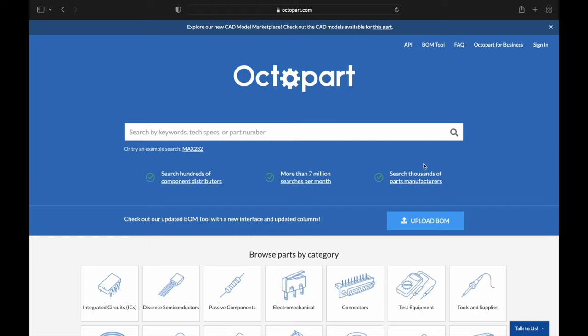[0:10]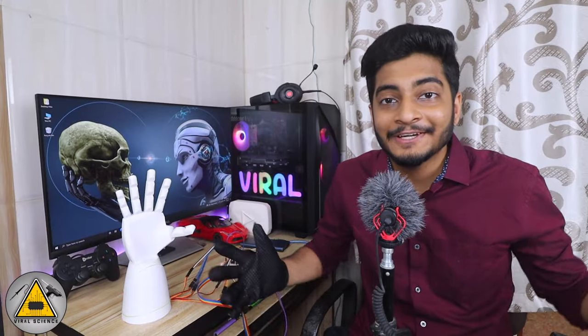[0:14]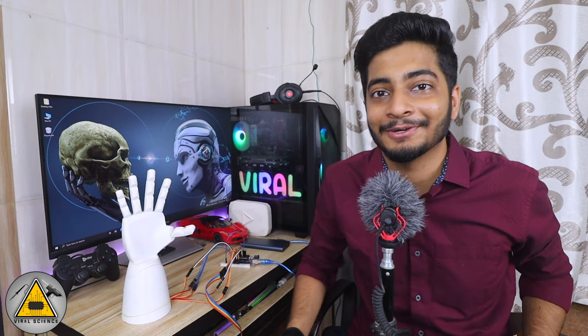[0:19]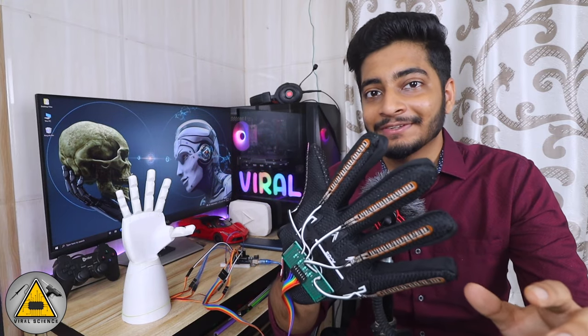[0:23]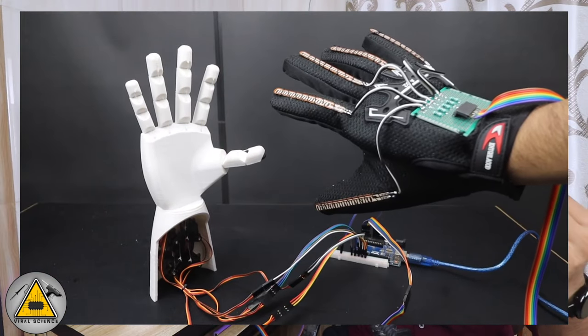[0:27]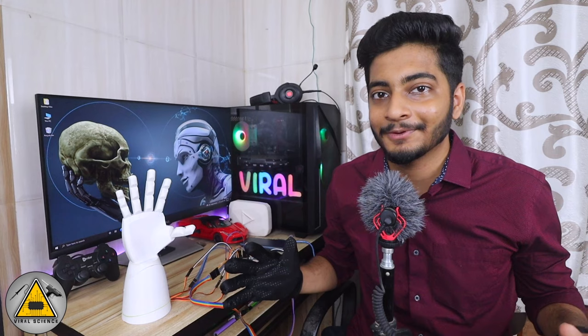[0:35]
Hey friends, welcome back to another video, and in this video I'll show you how to make this robo hand which can be controlled with this glove. Now this glove has some flex sensors on each of the fingers, and when this sensor is bent it changes its resistance value, and we are using this value as an input through Arduino, and we are using servo motors to control the fingers of this robo hand. Now this is a very simple project, and I'll explain you the code as well in the video.
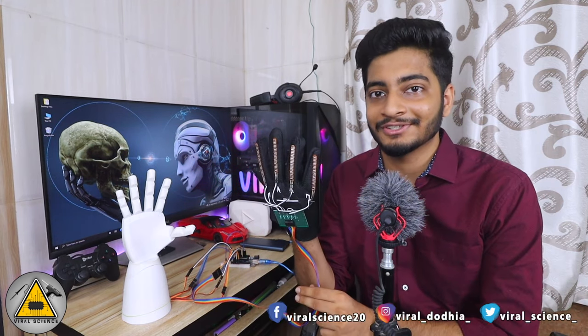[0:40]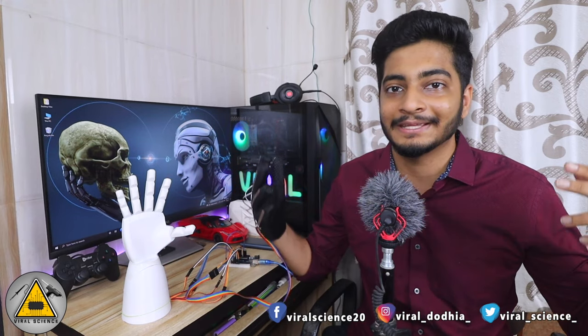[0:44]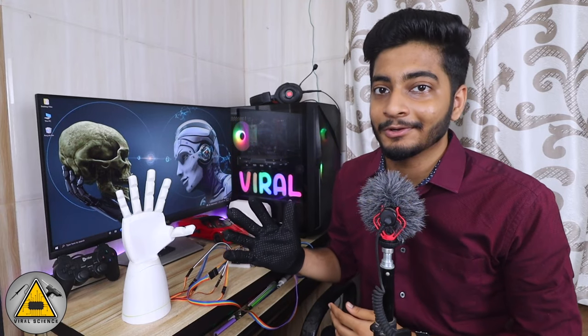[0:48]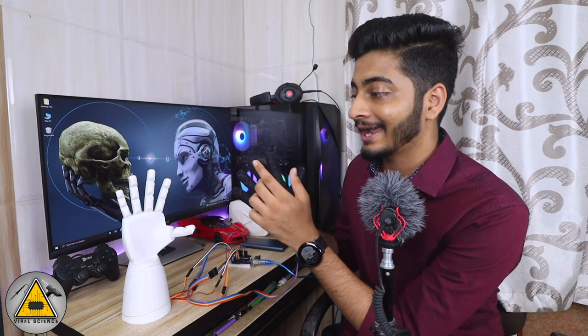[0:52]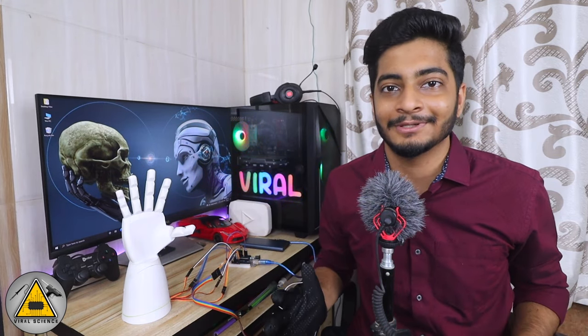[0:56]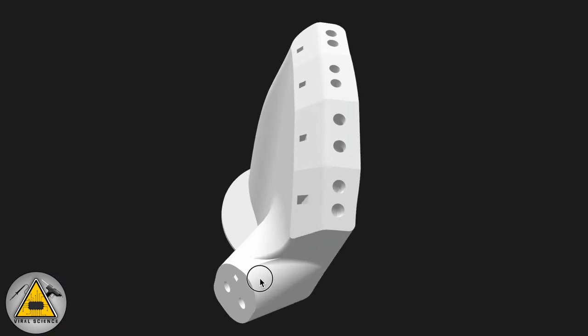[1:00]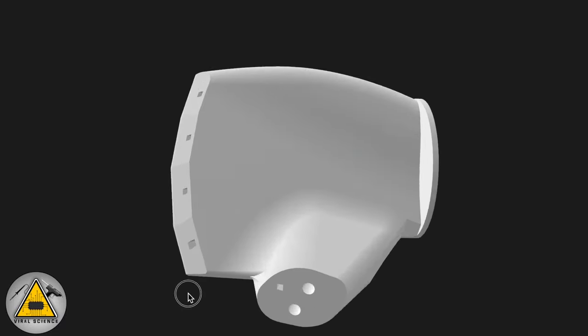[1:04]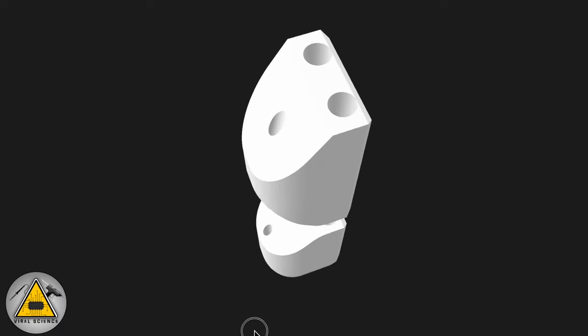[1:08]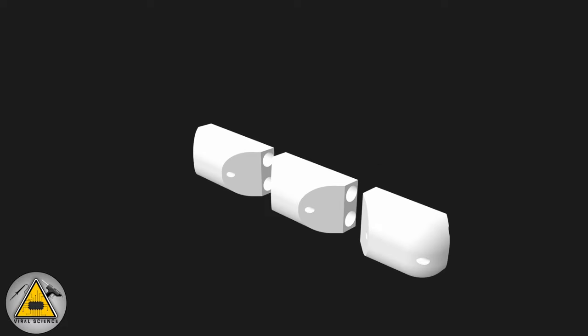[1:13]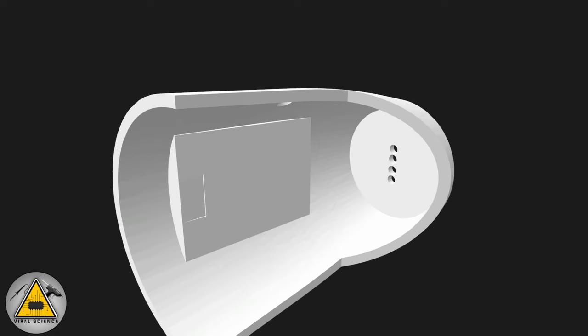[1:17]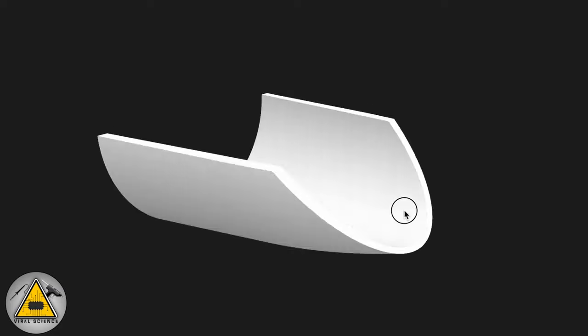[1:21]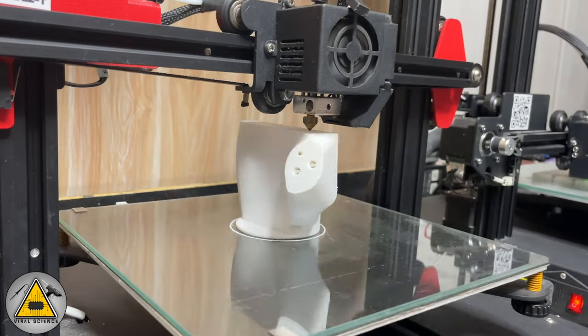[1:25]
These are the 3D files which we'll be 3D printing. This is the right hand and this is the left one. This is thumb. And these are all the fingers. This is the lower extended part of the hand where we'll be connecting servo motors, and this is the cover for it. So now we'll 3D print all these files.
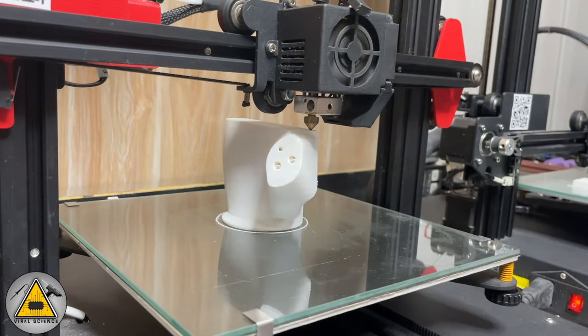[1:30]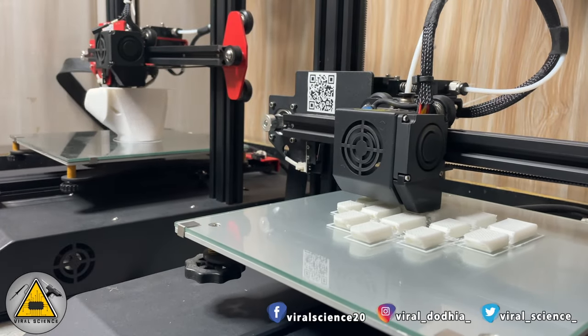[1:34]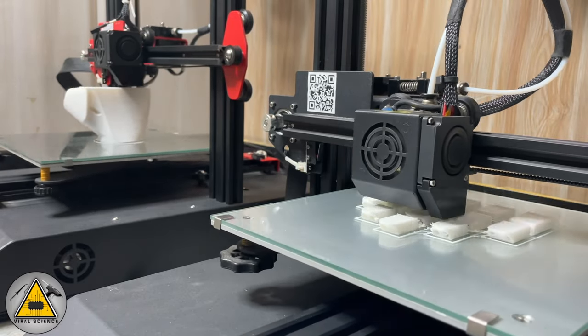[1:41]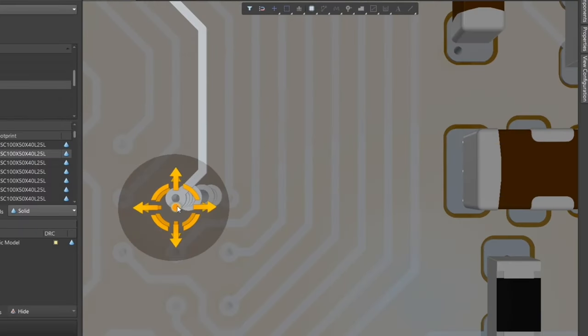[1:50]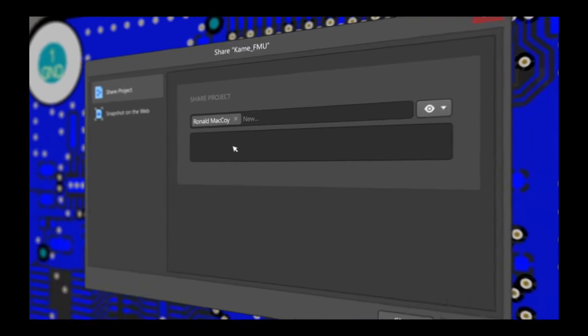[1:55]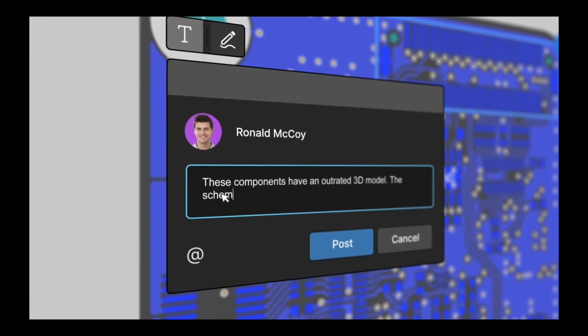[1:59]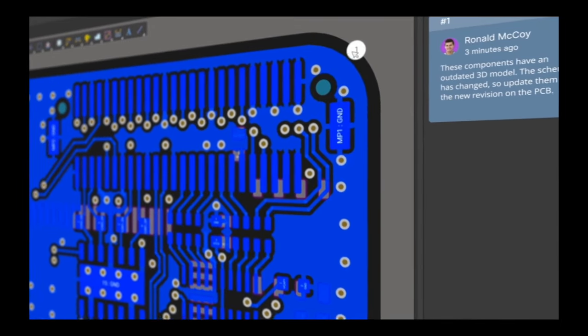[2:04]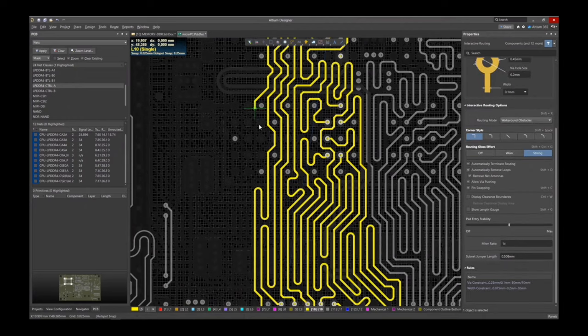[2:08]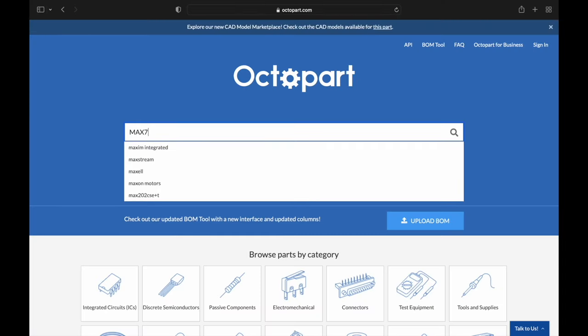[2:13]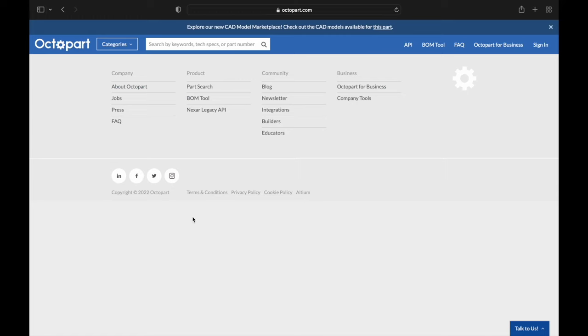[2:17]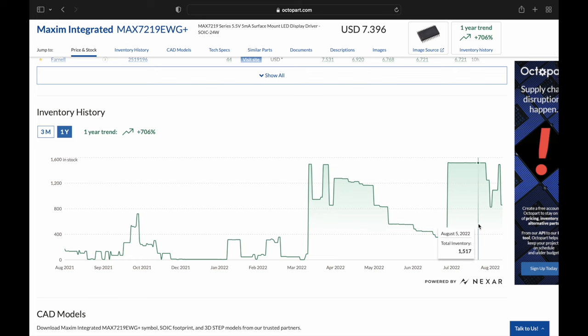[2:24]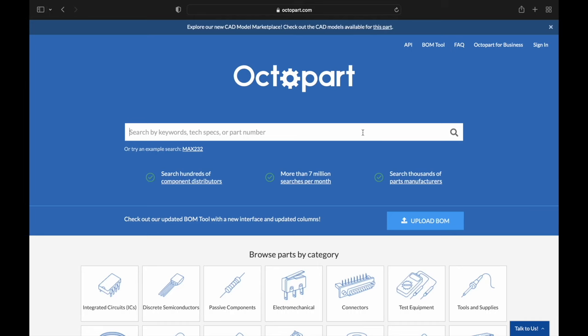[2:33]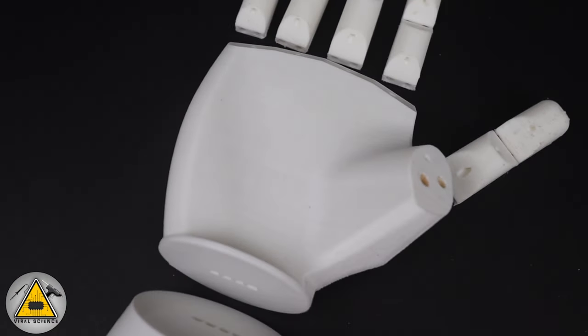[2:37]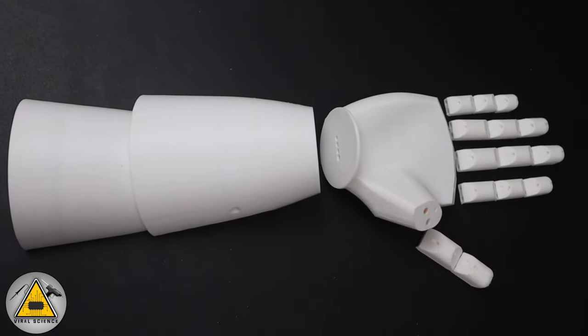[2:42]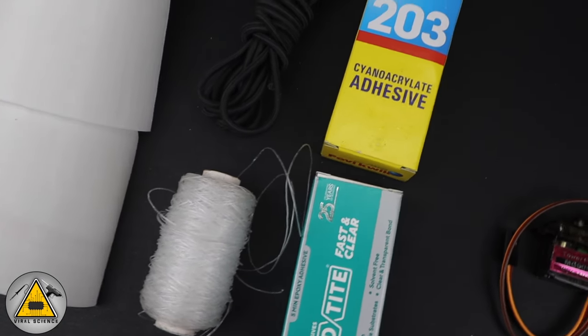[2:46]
So here are all the 3D printed parts ready for our robo hand. And with this, you will need a transparent string. You'll need some adhesives to stick it. And also you'll need a 2mm elastic band to connect the fingers.
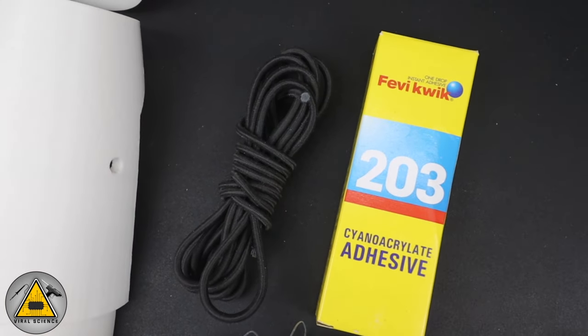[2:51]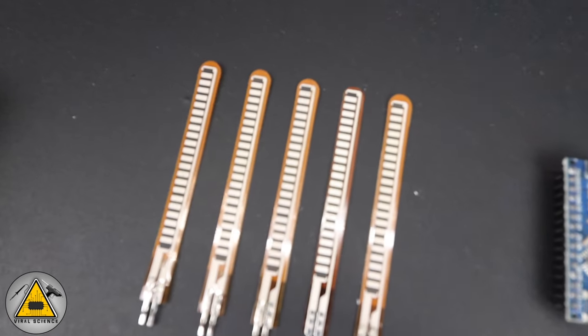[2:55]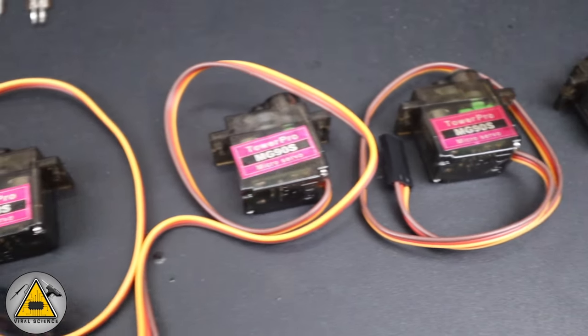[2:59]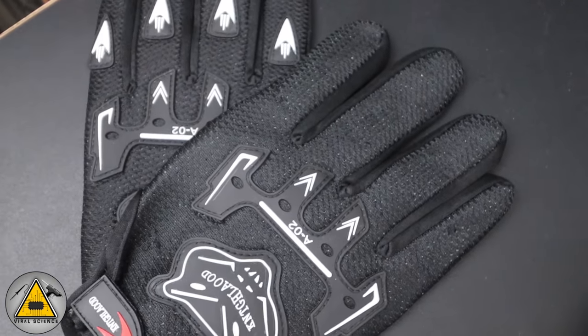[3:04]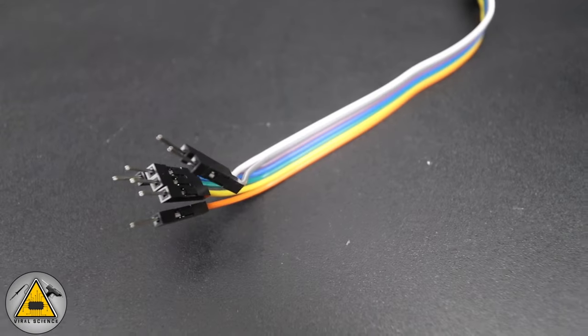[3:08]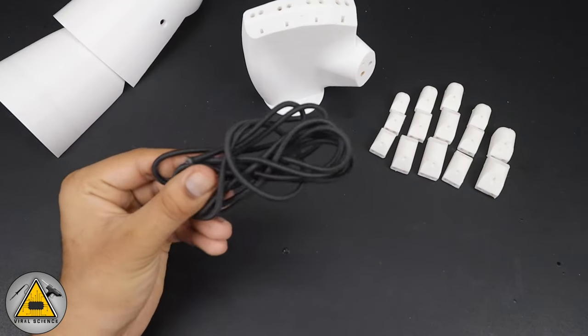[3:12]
So from the electronic section, you'll need an Arduino board. I'm using Arduino Uno. These are the flex sensors. I'm using 5 flex sensors for each of the fingers. And these are the 5 servo motors. This is a pair of gloves. You will need one glove. This is a breadboard, and you will need some jumper wires. So now let's assemble this robo hand.
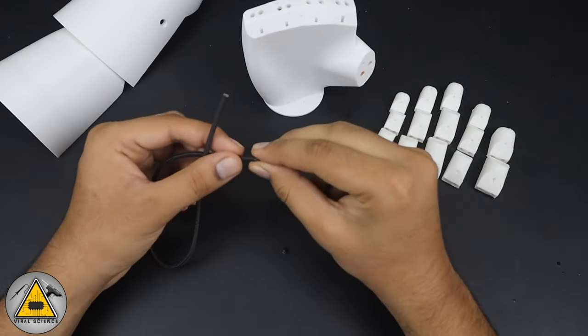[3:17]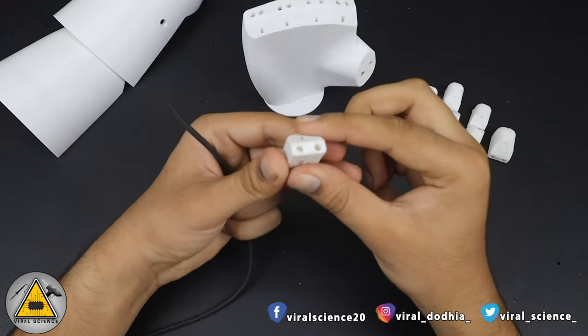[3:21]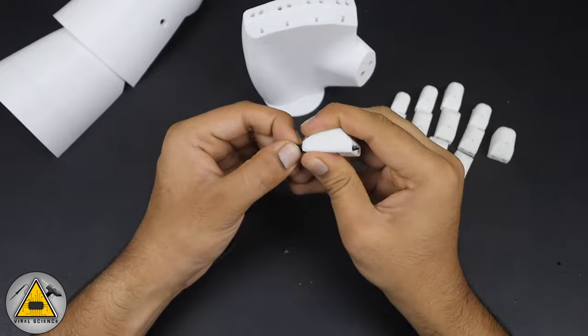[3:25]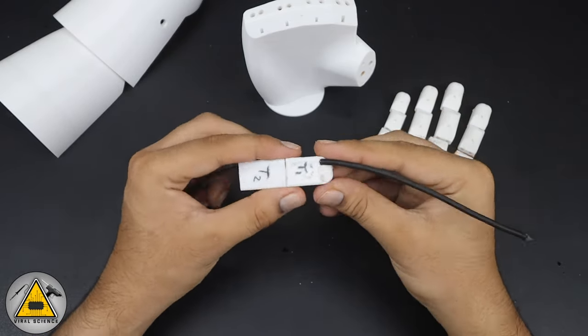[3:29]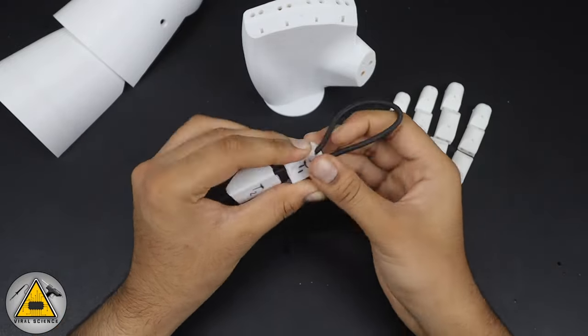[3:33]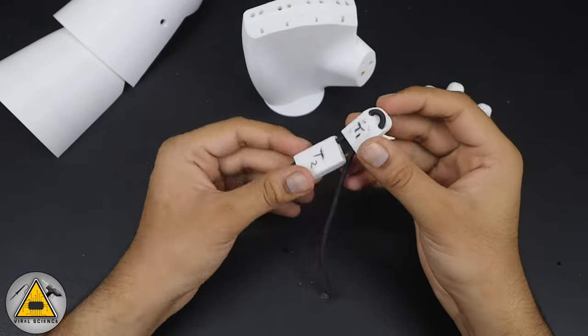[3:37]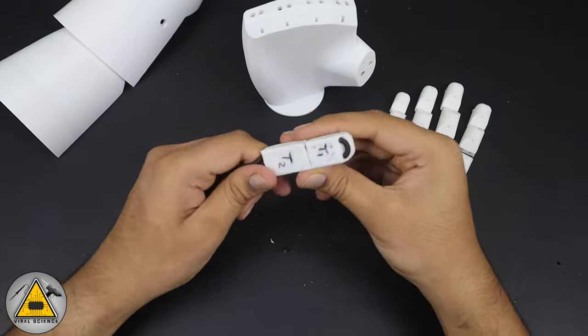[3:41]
So first we'll need this 2mm elastic band. I'm taking a piece of it, and first we'll assemble this thumb. So clear out these holes and pass this 2mm elastic band through these holes. Take the second piece, pass through it as well. And again pass from that second piece and again to the first one. So in this way we have to assemble the fingers. So the thumb is assembled because it has just 2 joints.
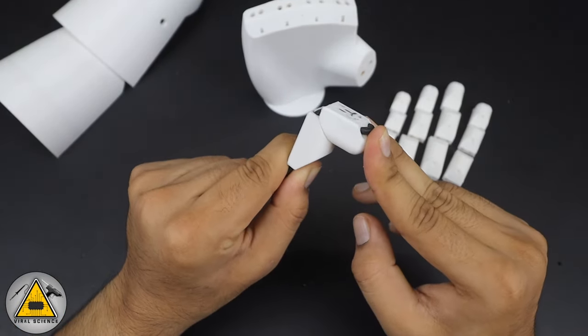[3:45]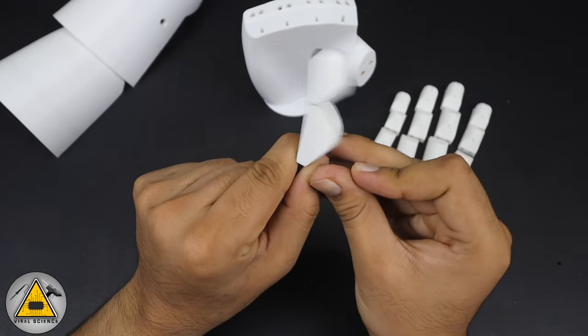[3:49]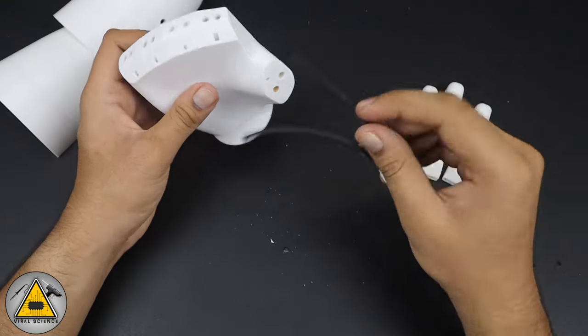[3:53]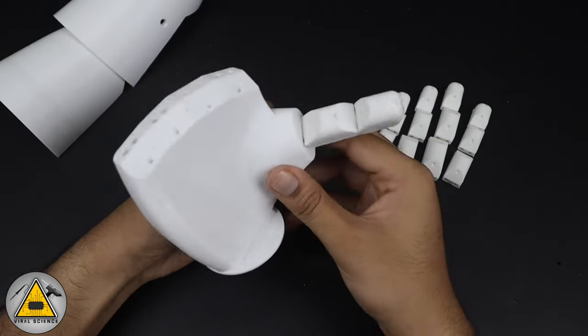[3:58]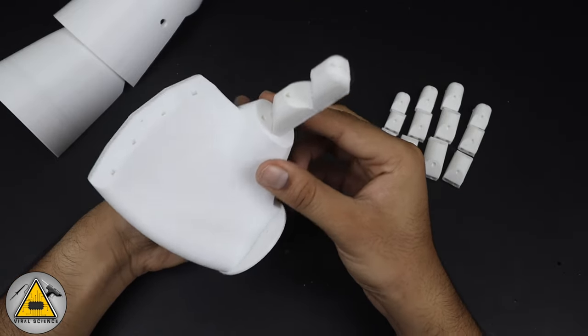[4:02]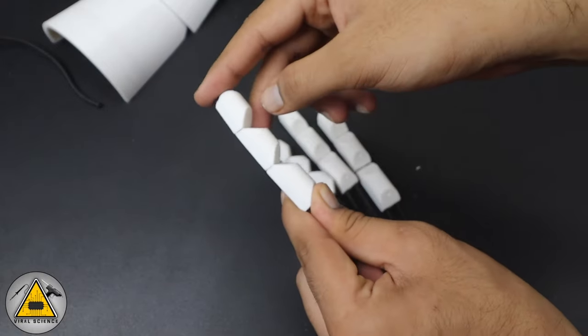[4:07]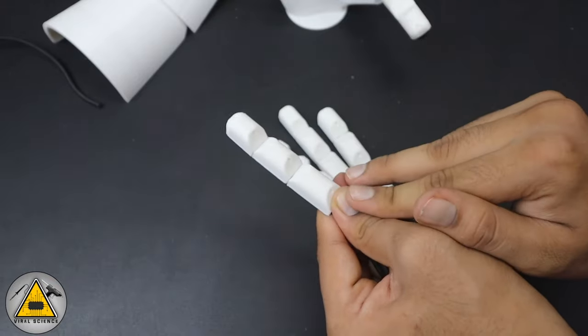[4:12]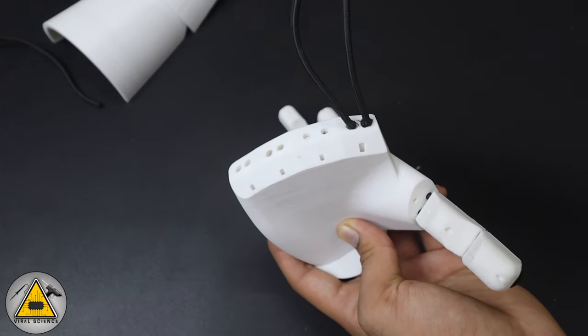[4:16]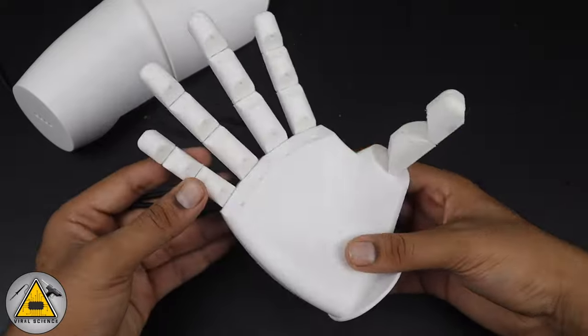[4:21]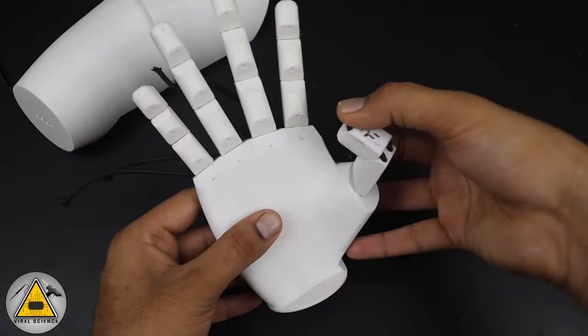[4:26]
Similarly, we'll connect this to our main hand. We'll pass this elastic band from the holes and we'll tie a knot on the back side. Similarly, I have assembled these fingers as well. All these fingers have 3 joints each and it's working perfectly. So now we'll pass on this elastic through the holes of the main hand and we'll tie a knot on the back side. So you can see in the video. And now all the fingers and the thumb is working perfectly.
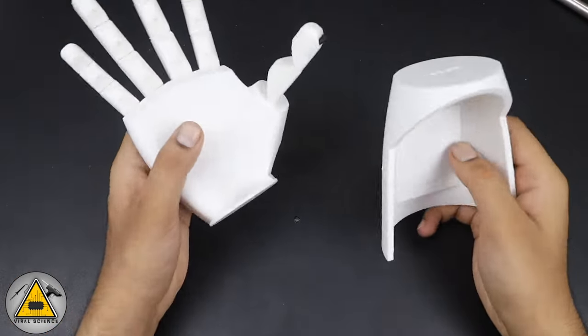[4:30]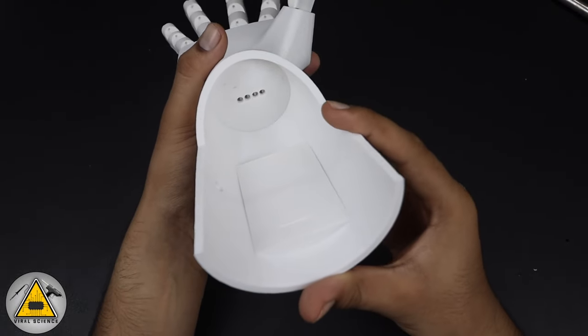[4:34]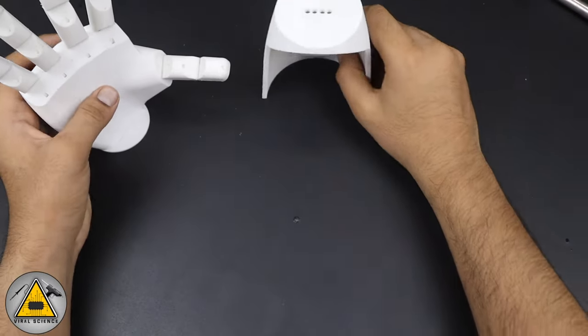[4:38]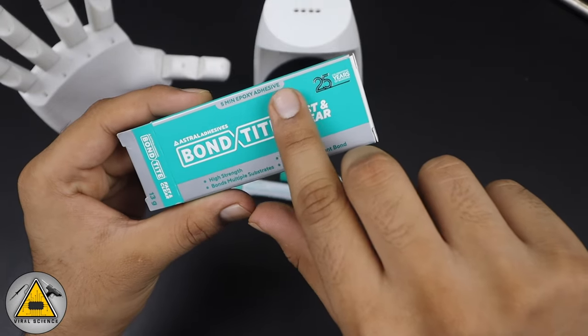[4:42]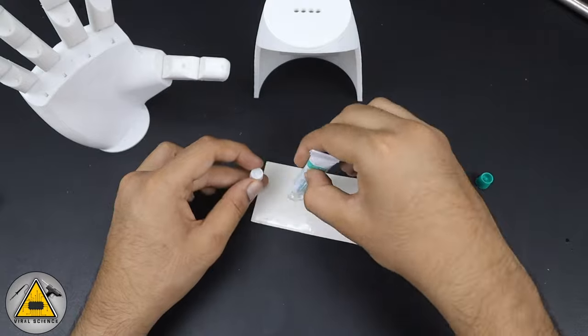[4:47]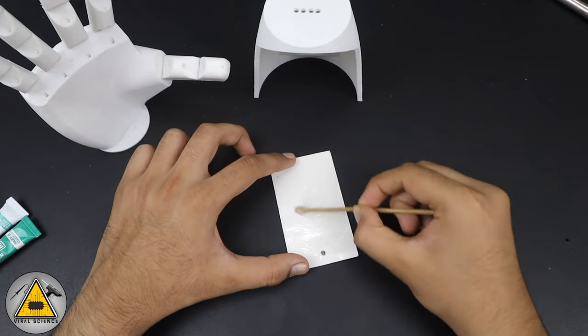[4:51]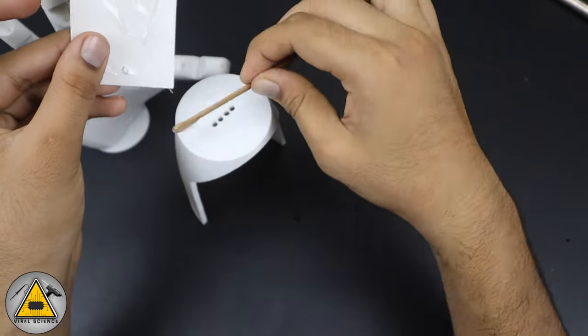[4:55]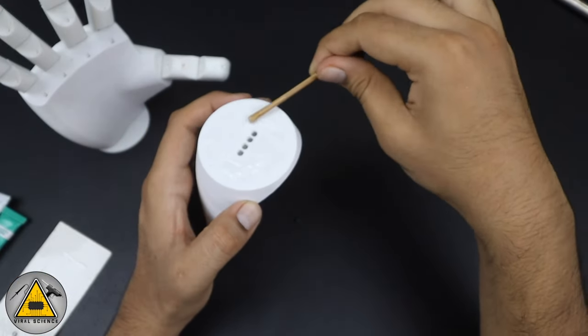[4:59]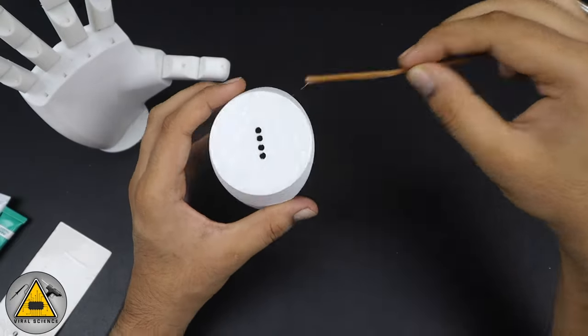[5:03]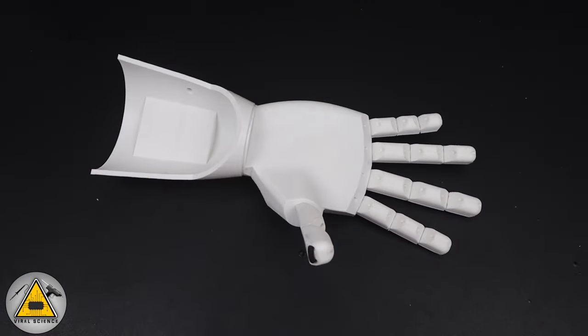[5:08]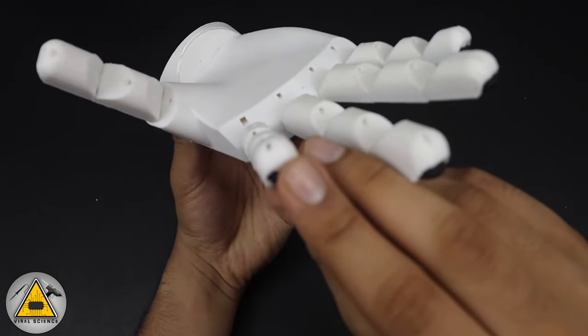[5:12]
Now we'll connect this lower extended part to the main hand. So to do this, we need to stick it. And to stick it, I'm using this Bond Tite adhesive. So this adhesive just requires 5 minutes to stick. So first we'll mix the 2 compounds properly. We need to take equal amount of compounds. Now we'll spread it on the lower end, and we'll stick the upper hand and we'll match the holes. So now after 5 minutes it dried up and it was sticked properly.
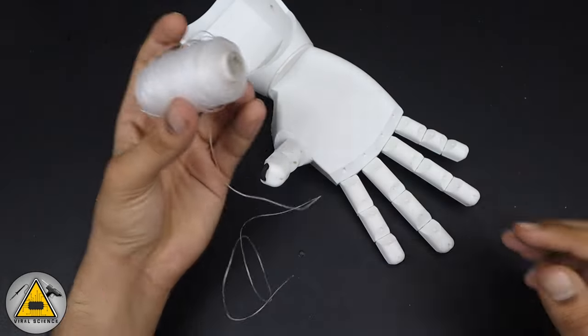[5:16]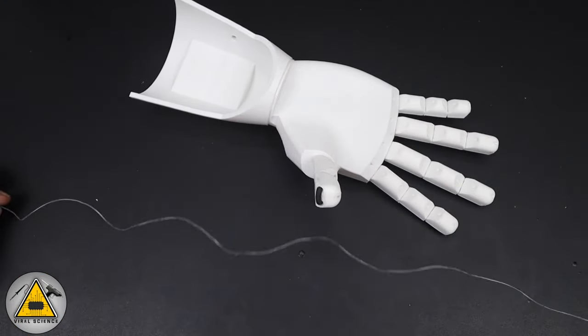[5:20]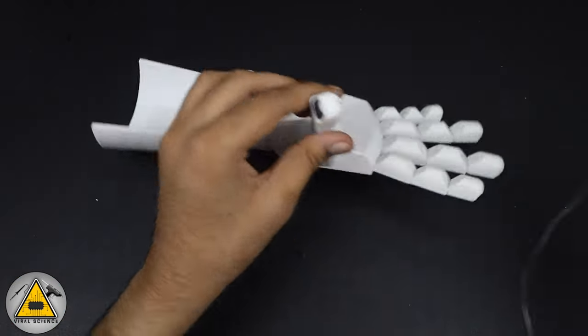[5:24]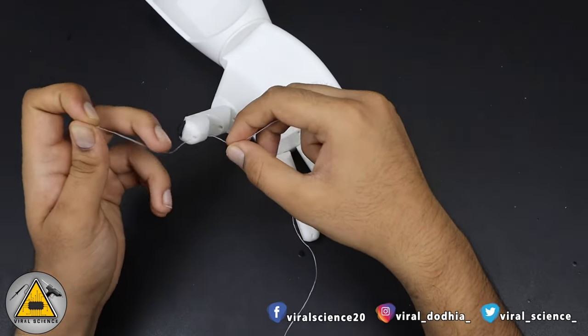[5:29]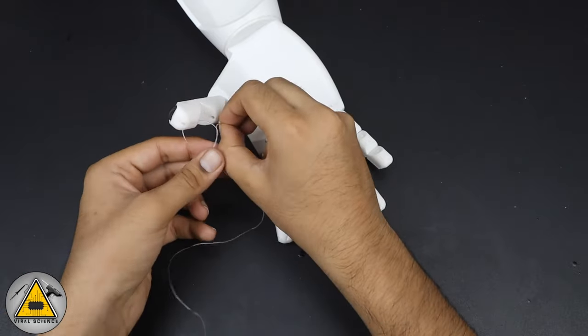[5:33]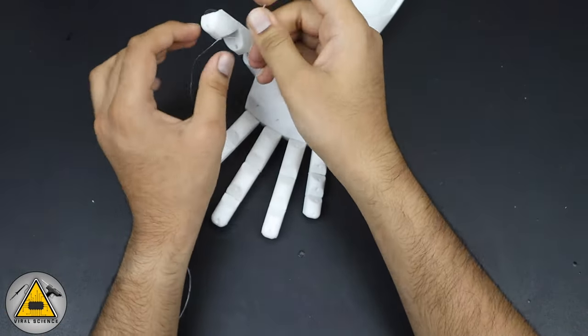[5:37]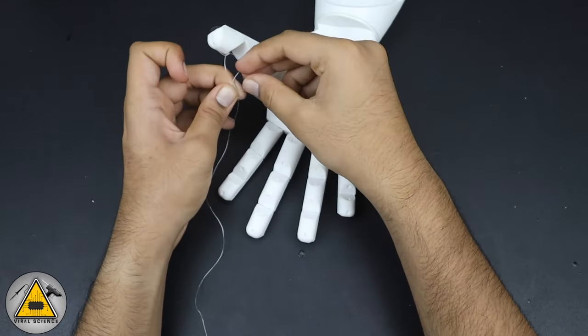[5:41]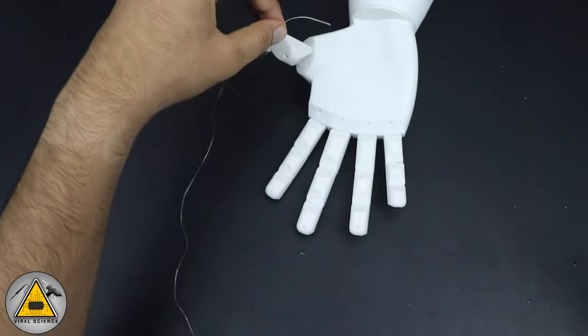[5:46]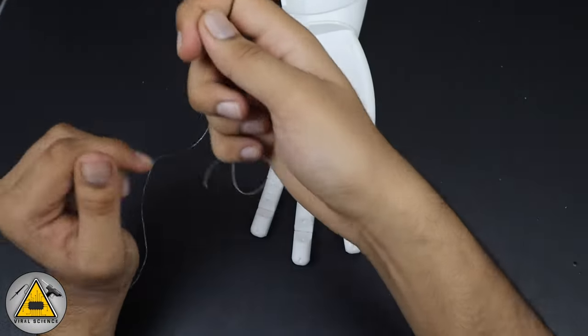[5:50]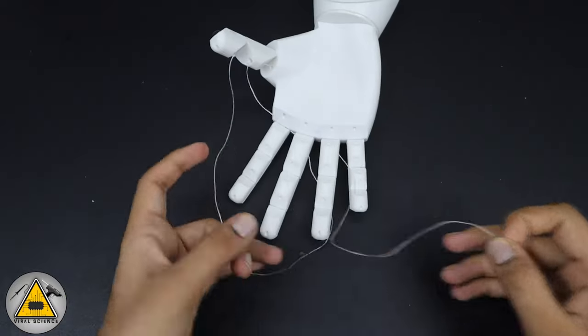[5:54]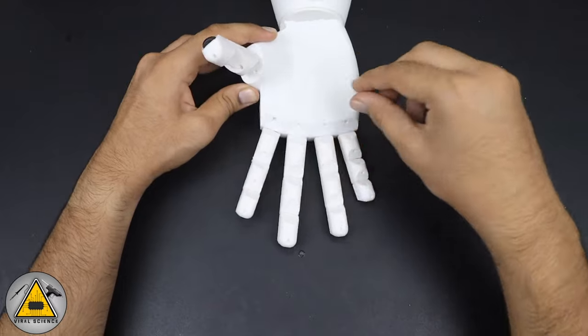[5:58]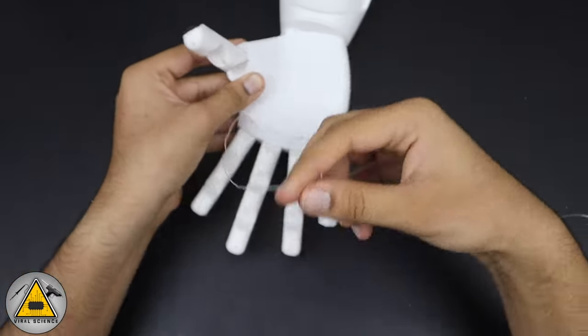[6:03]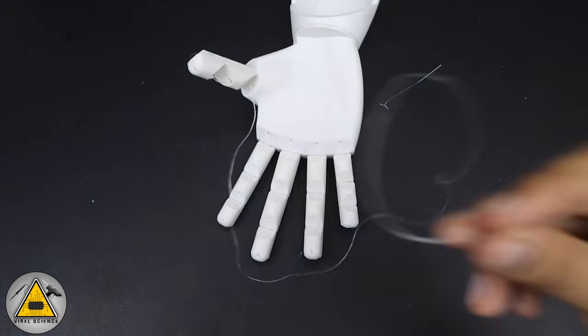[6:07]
So now we'll connect the transparent string to each of the fingers. So we'll take a piece of it and we'll pass from the top joint of the thumb and we'll tie a knot over there. And now we'll pass the string from the respective corresponding holes. And at last from the hand. And from here we'll get the string at the bottom where we'll be connecting the servo motors.
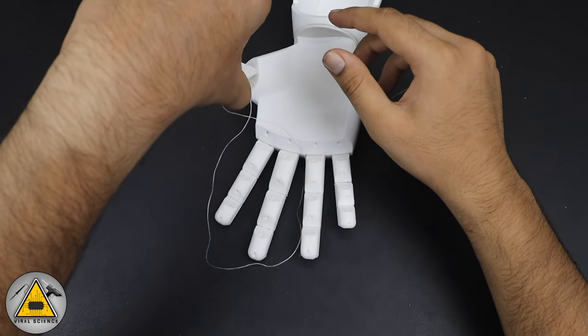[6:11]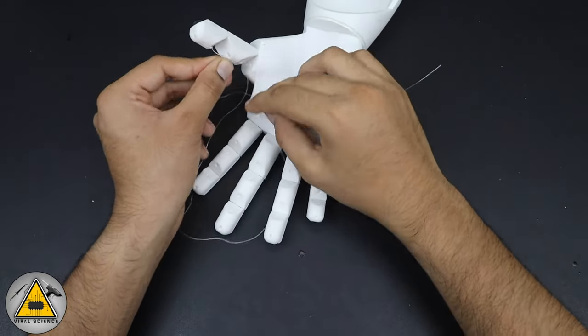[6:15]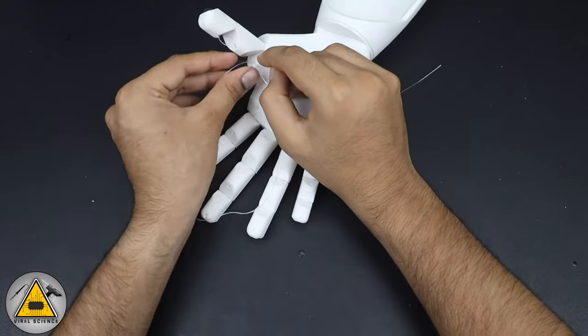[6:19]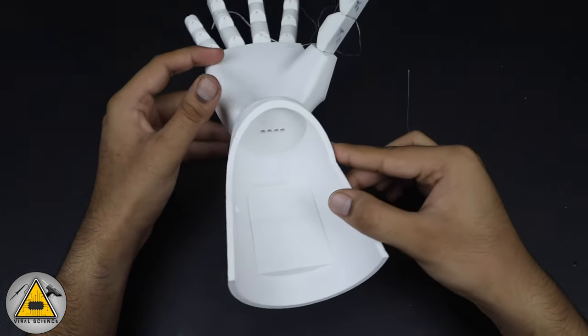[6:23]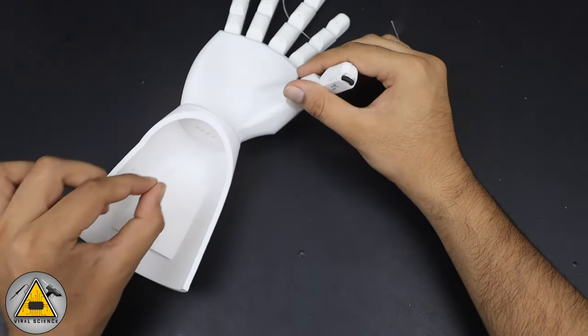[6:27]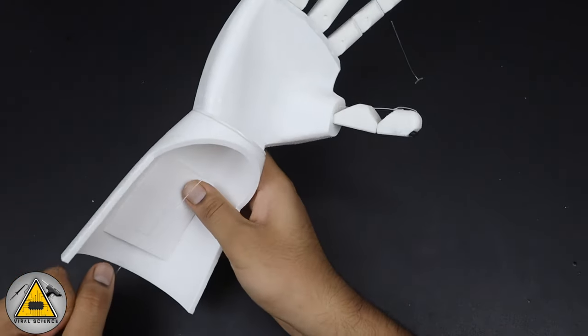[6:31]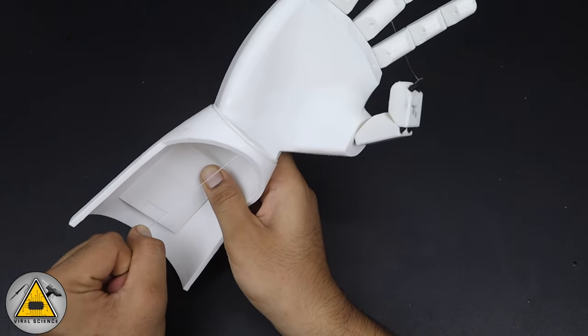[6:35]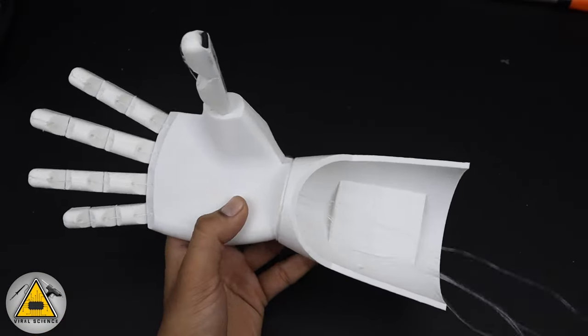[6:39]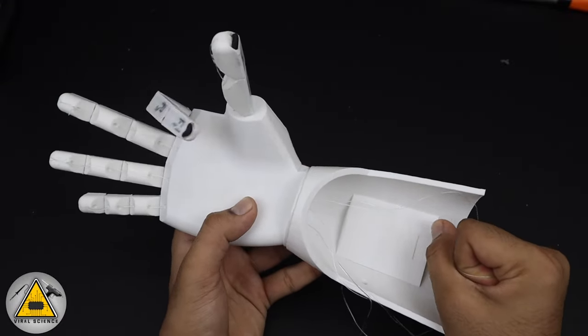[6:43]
So now as you can see, when I pull the string, you can see the movement in the thumb. So this will be done by the servo motors. Similarly, I have connected strings to all the 5 fingers and you can see it's working very smoothly and perfectly.
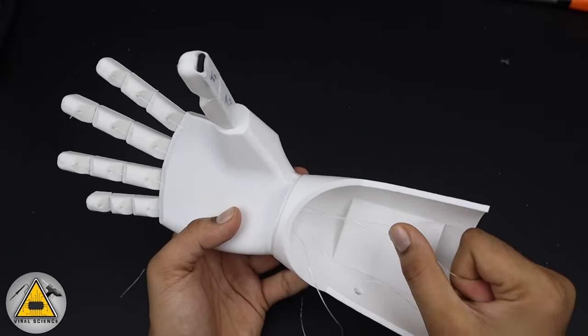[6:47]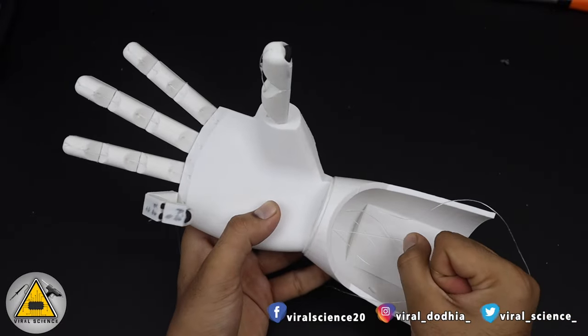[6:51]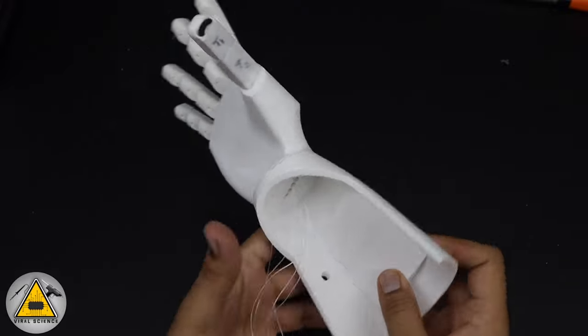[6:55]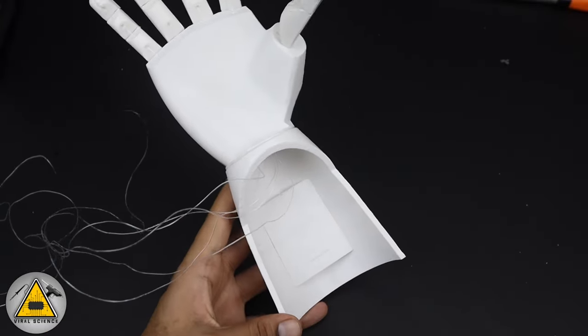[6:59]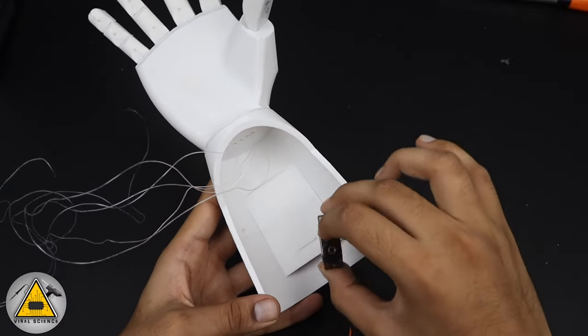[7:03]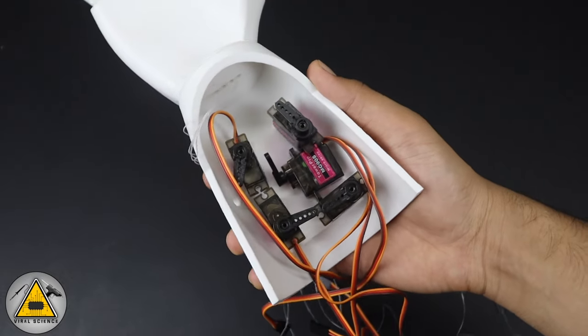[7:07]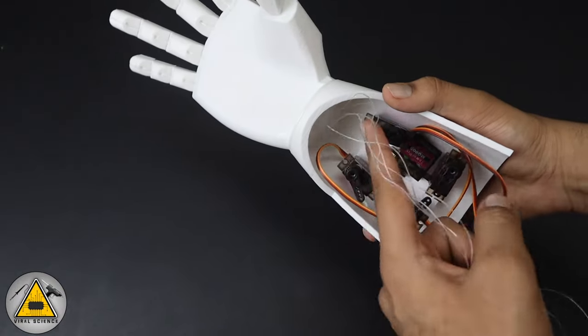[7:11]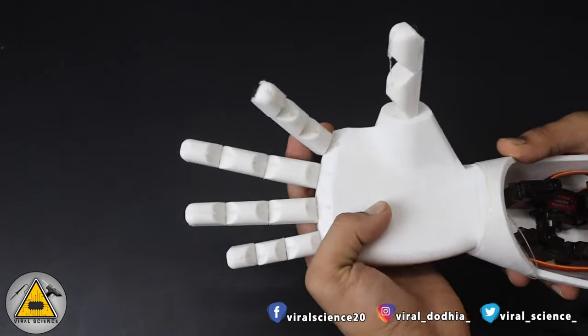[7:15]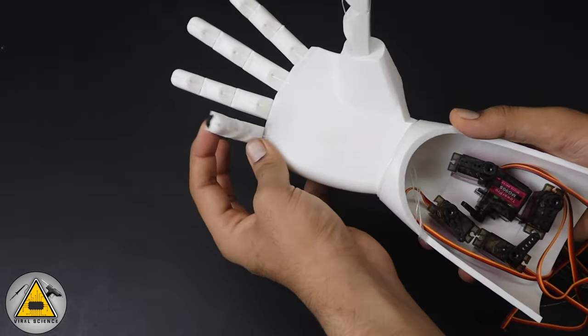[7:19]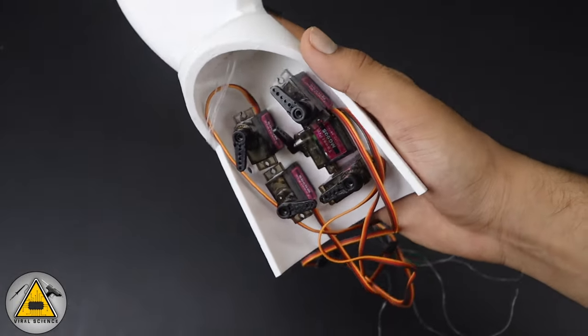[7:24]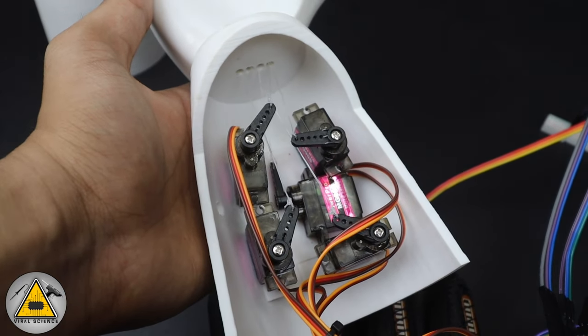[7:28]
So now we'll connect the servo motors on this bottom part with the super glue. You can see the alignment of the servo motors, how I have sticked it. And now you need to connect this string to each of the servo motors arm. Now I have connected the string to the servo arm and also put a drop of super glue so it won't come out.
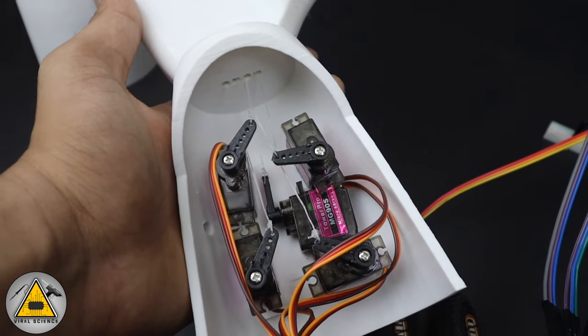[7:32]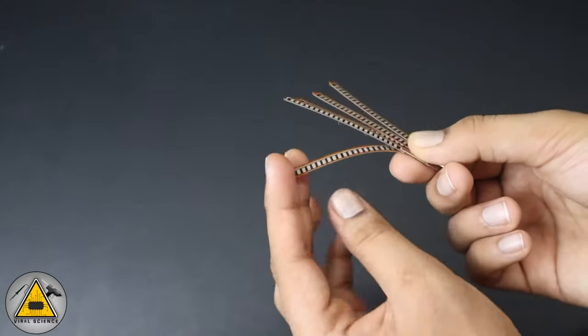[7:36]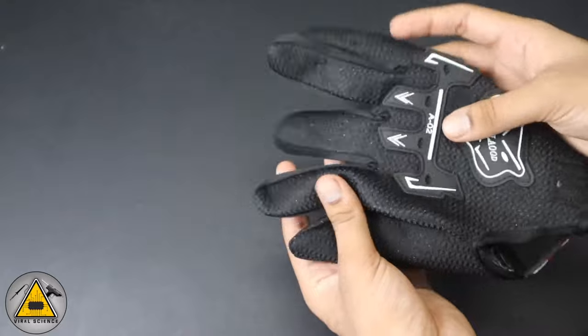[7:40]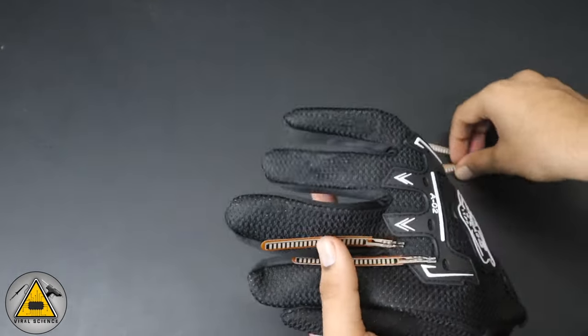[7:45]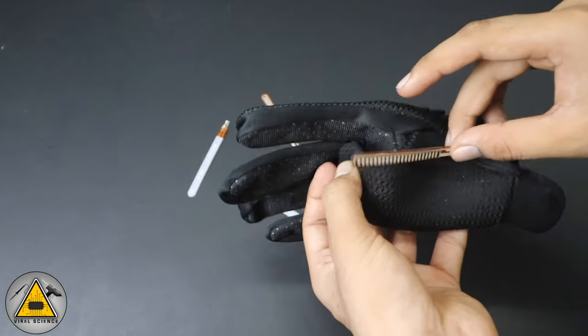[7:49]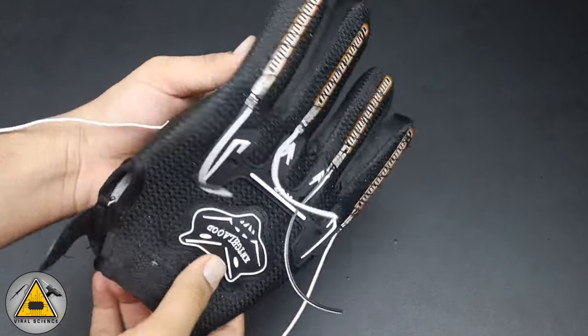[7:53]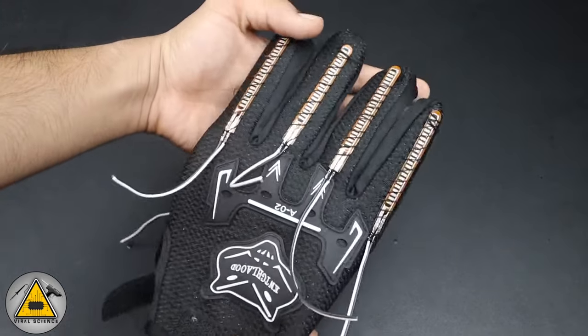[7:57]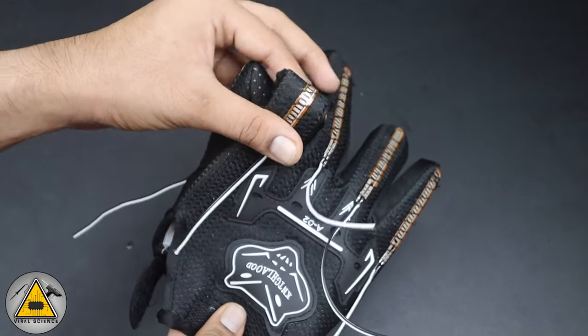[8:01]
So now we'll connect these flex sensors on the glove. So each finger will get a flex sensor and to stick it on this glove, we'll use a needle and a thread and we'll stitch around this flex sensor on the fingers. As you can see, I have done the stitching work. Make sure you don't damage the flex sensor while stitching. Also, I have soldered wire to each of the flex sensors.
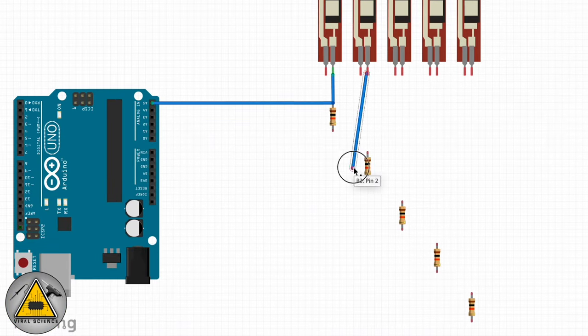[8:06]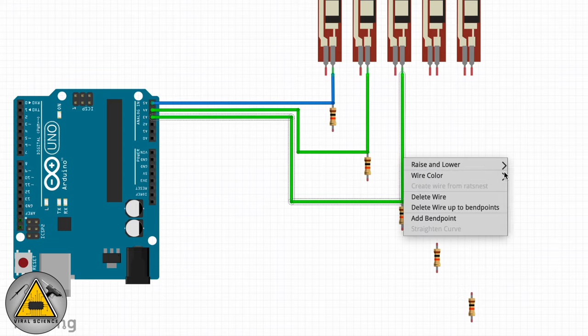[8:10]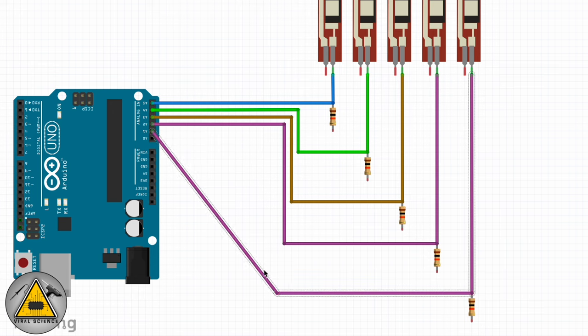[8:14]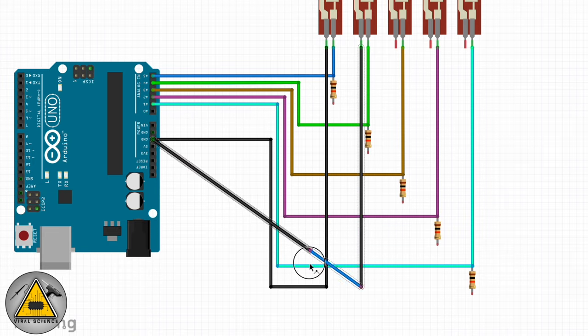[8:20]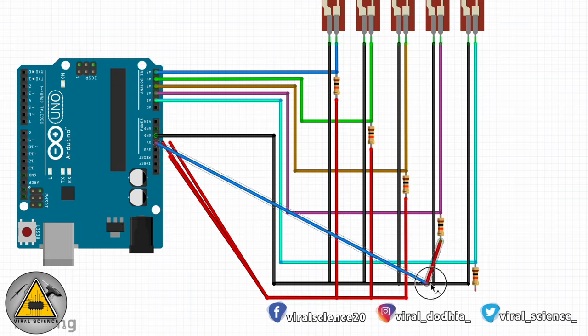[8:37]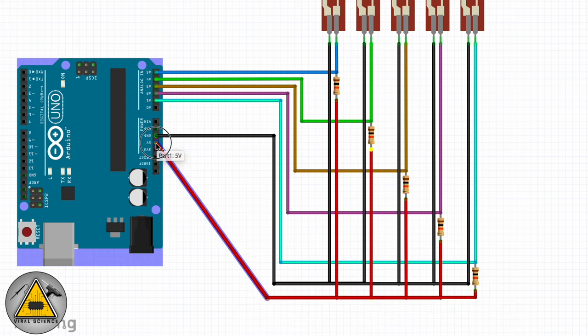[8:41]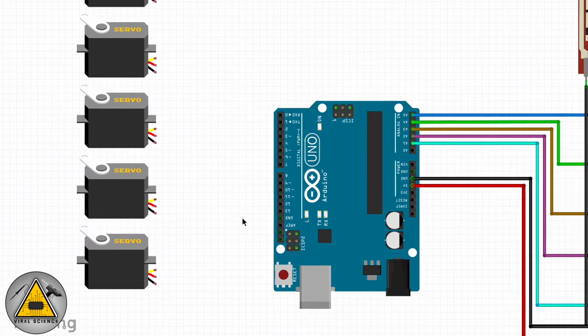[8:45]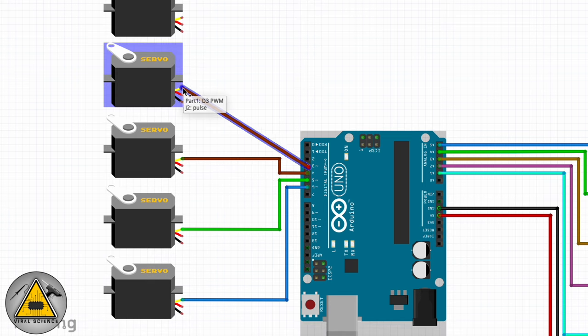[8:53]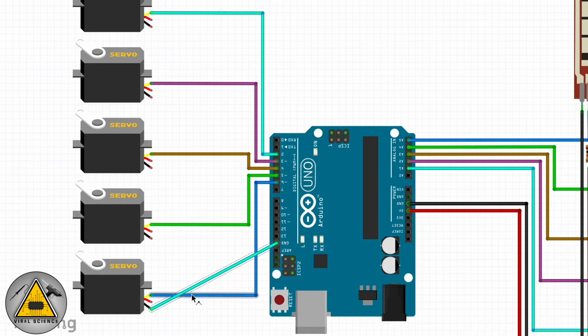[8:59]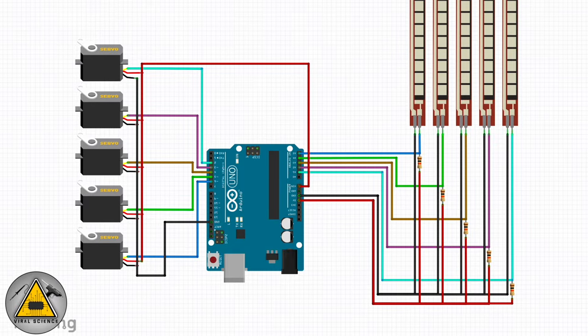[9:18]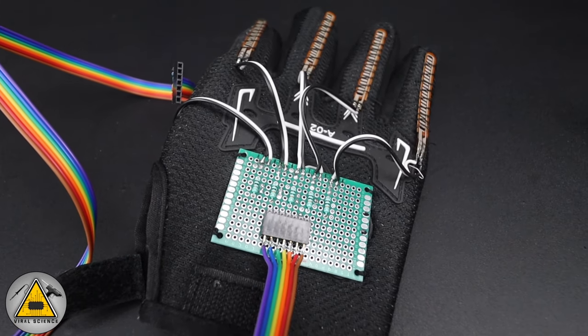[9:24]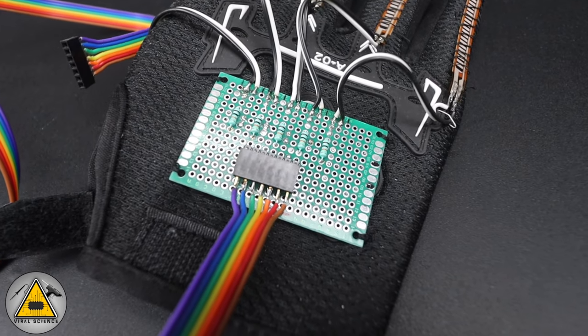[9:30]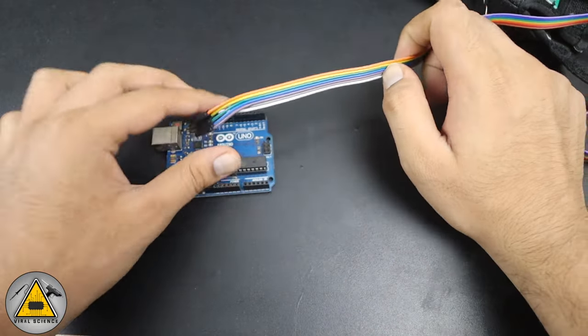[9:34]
So now it's time for the electronic connections. So here is the circuit diagram which I am demonstrating. So you need to do all the connections according to this circuit diagram. So as per the circuit diagram, I have soldered these resistors on a PCB and stitched it on the gloves. And to extend this connection to Arduino, I'm using this ribbon cable. So now we'll continue the remaining connections with the Arduino.
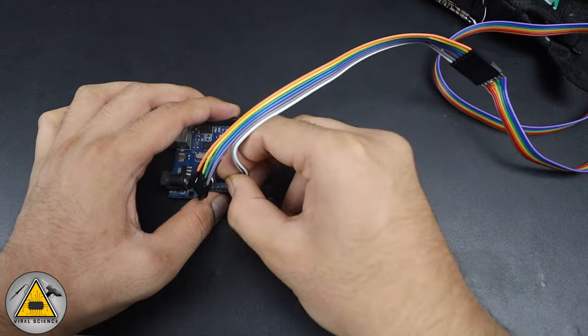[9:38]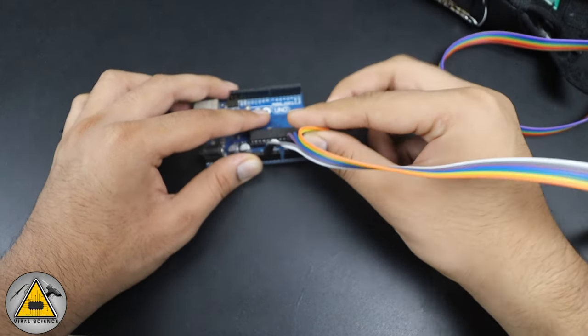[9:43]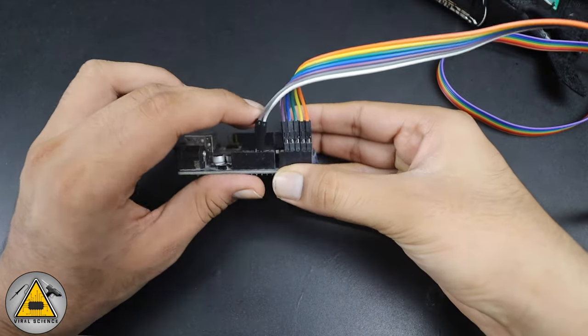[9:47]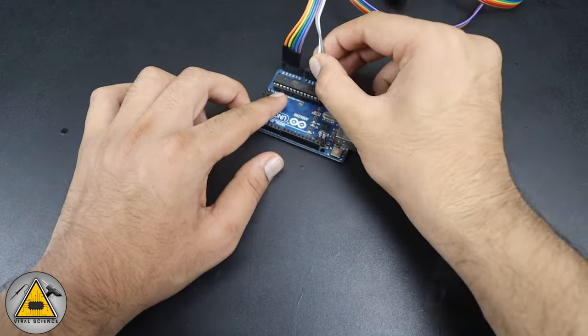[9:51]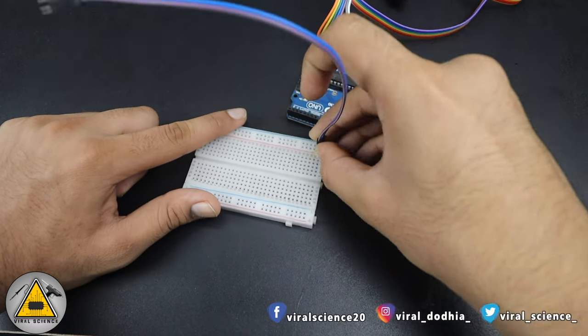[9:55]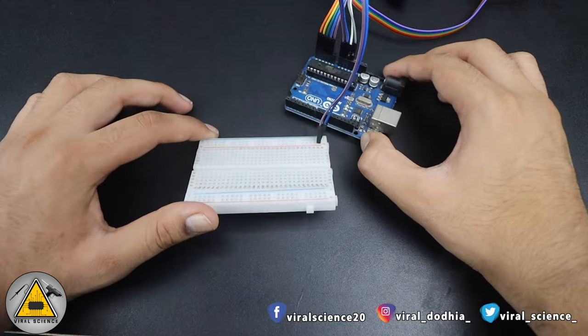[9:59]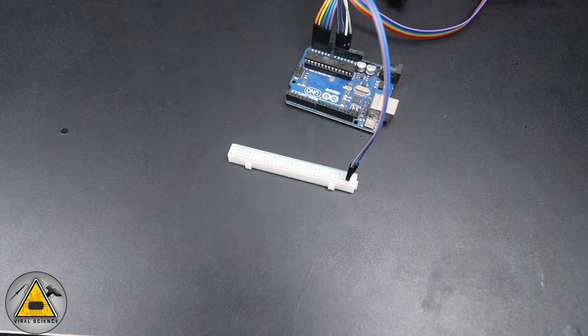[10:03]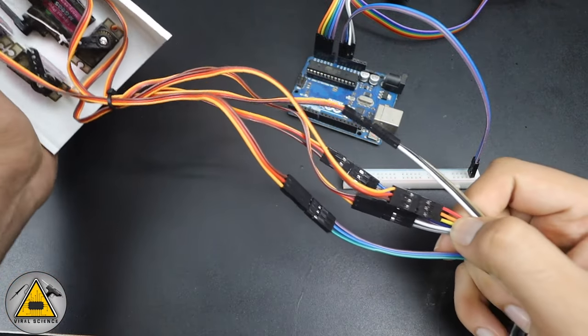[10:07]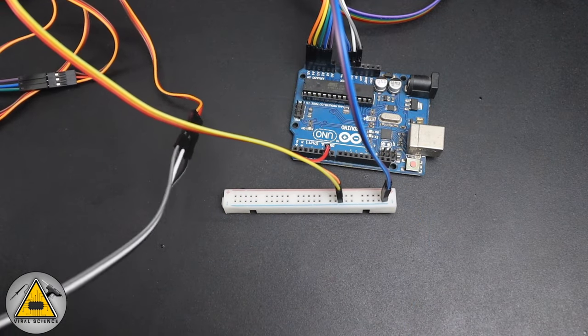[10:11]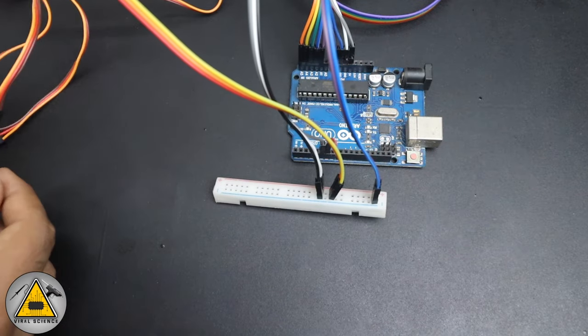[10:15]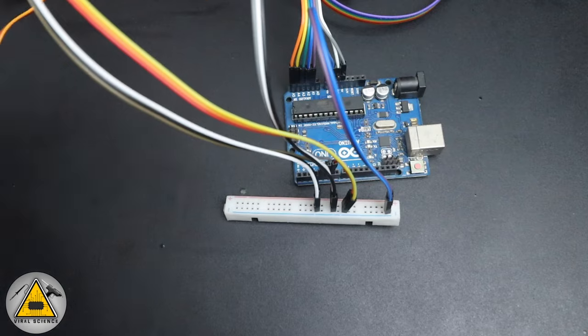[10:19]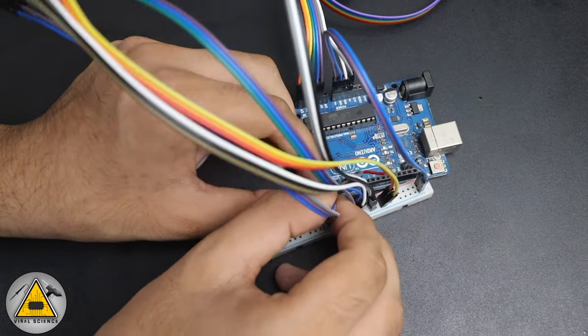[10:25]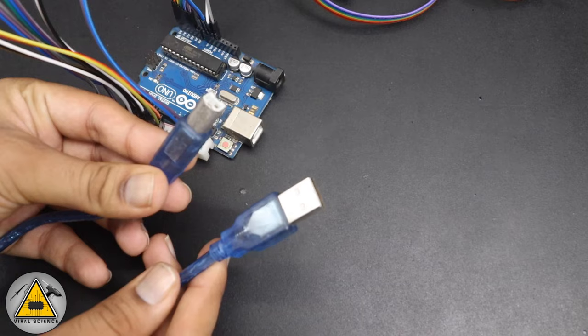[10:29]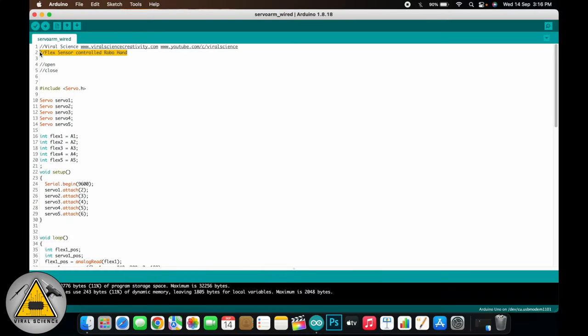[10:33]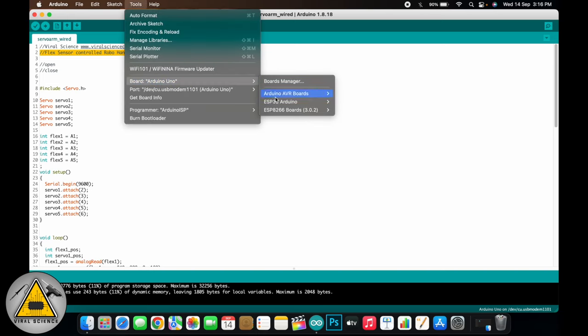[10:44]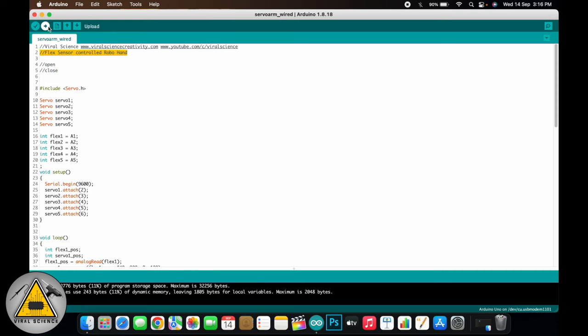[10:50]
After completing the connection, it's time for the programming. So we'll connect the Arduino board with the computer. So here is the code of our project. And first we'll upload this code as it is. And after uploading, we'll read the inputs from the flex sensor and we'll note it down. So to do this, select the board that is Arduino Uno. Select the port on which it is connected and upload the code.
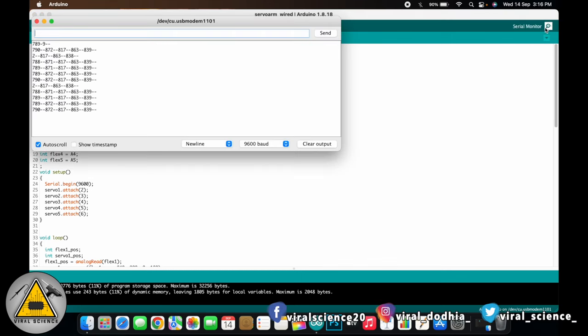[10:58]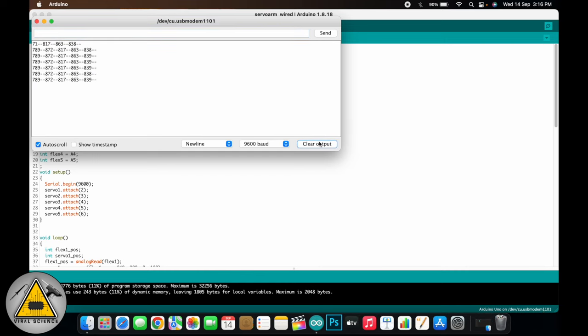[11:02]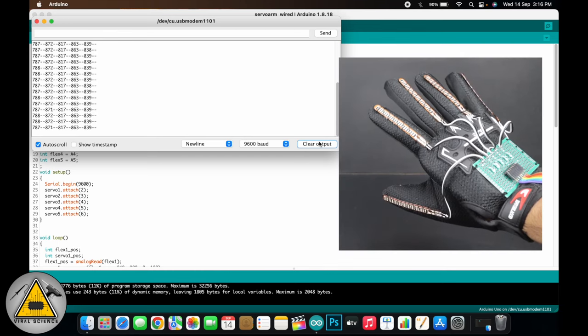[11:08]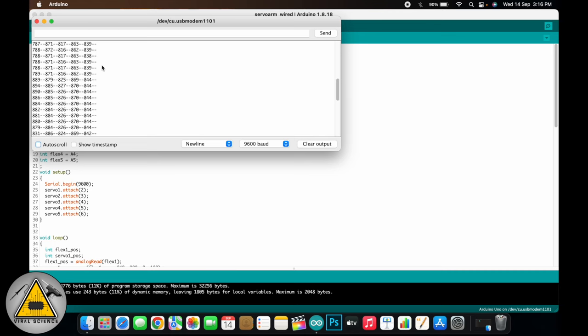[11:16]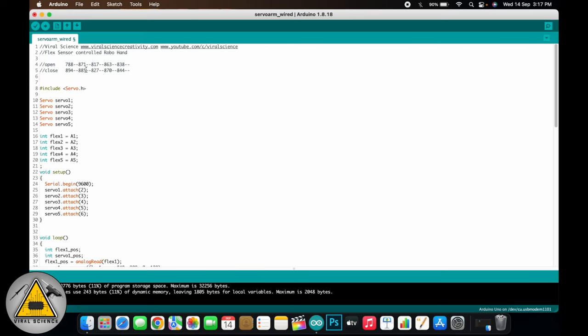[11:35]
After uploading the code, open the serial monitor. And here select the baud rate as 9600 and you will find the sensor readings of the flex sensors. Note down the readings of the sensor when the hand is open and when the hand is closed. So from this we'll take the first reading when the hand was open. And we'll take the last reading when the hand was closed. So I have just put it in the comments for my reference. So here we have noted the minimum and the maximum values of the flex sensors when hand is open and closed.
Over here you can find we have included the servo library because we are using servo motors. Here we have declared the servo variables. And here we have declared the pin numbers for the flex sensors. So we are using analog pins for the flex sensors from A1 to A5. Here we have declared the pin numbers for the servo motors. So we are using digital pins D2 to D6 for servo motors.
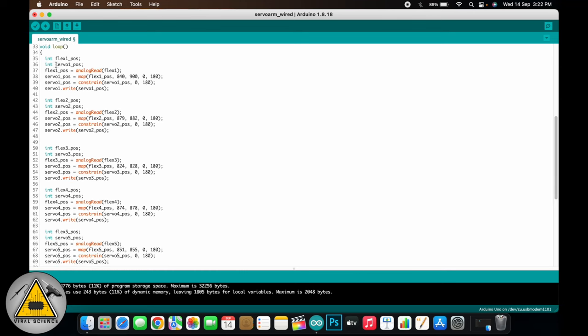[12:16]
So here comes the main functioning of this code. So here we are reading the value from the flex sensor and we are storing it into flex1_pos. And then we have used map function. What this function does is it reads the value and we have to set the range, and if the value lies in that range, it calculates the difference how far the value lies from the start point to the end point of that range and maps it to the other range, which is the servo angle range. And it will give us the single output that lies between the second range, and that is the servo rotation angle. We are storing it into the servo1_pos and we are setting the servo motor to that angle.
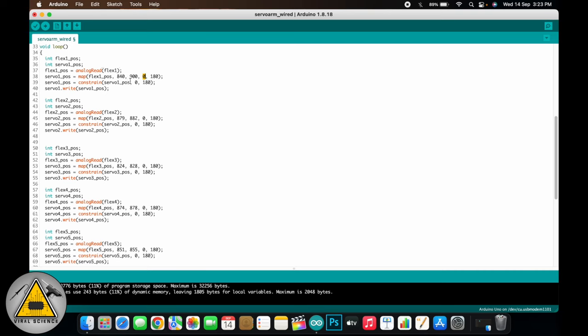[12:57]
For example, if the flex sensor reading is 870, then it lies in the first range and it's exactly at the center of that range. So same will be mapped to the second range. So the center of the second range, that is 0 to 180, will be 90 degrees. So 90 will be the output of this function and we'll set the servo angle to the 90 degree. So similarly, this thing will be done for all the flex sensors and their corresponding servo motors.
At the end of the code, I've added some print statements to print the readings of the flex sensors. And if you uncomment this one, then it will print the angles of the servo motors as well. And it will be displayed on the serial monitor as we have seen before. You can also change this delay. I've set it to 300. You can set it between 100 to 500.
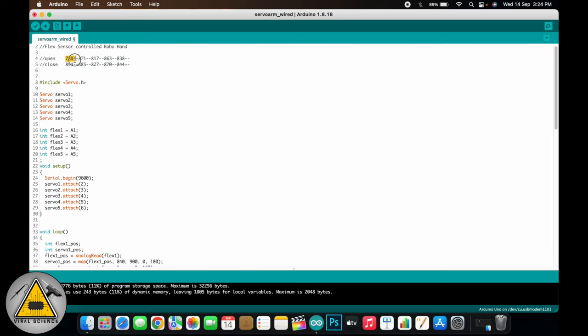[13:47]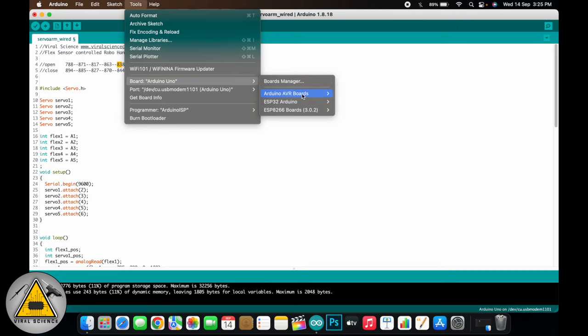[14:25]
So now we'll set the range of the flex sensors according to the input which we have got. So the first flex sensor has a range of 788 to 894. So we'll do plus and minus 5. So we'll set it to 795 to 890. Similarly, we'll do for the second one. If the range is less, then you can do plus and minus 1. So after doing it for all the flex sensor, we'll just simply upload the code. So select the board, port, and upload the code.
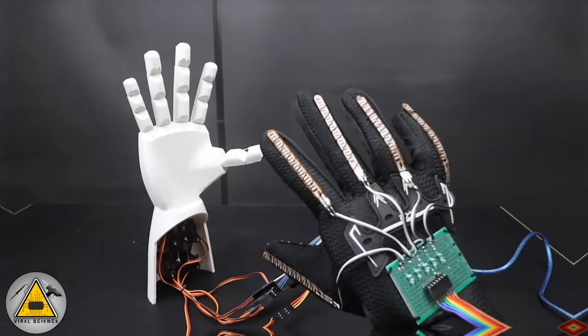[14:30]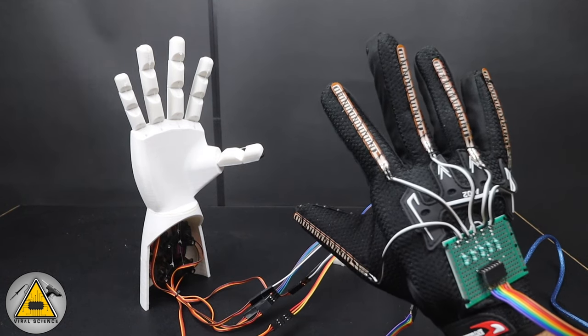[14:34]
If the servo hand is not responding properly or responding automatically, then you can make some changes in the range of the flex sensor inputs. So if you bend any of your finger, then corresponding finger from the robo hand will also bend.